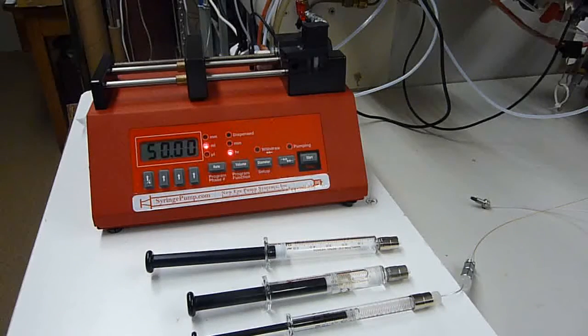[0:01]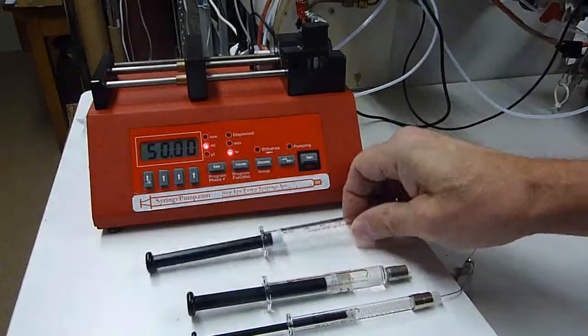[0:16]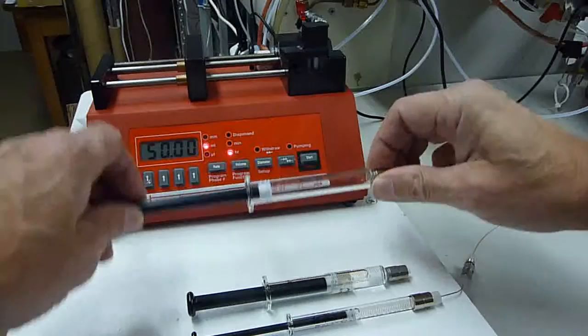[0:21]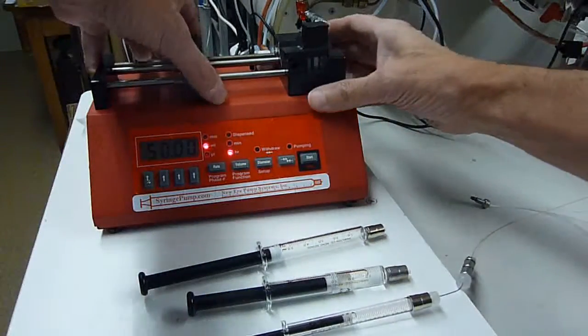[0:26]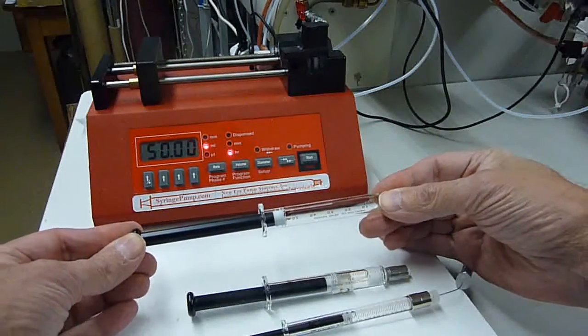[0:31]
I'd like to go over one of the accessories that I find useful for LCMS systems, and that is a syringe pump. A syringe pump holds a syringe. My favorites are the 5 ml and the 1 ml gas-tight syringe. And the job of the syringe pump is to push the plunger, displacing fluid at a constant rate.
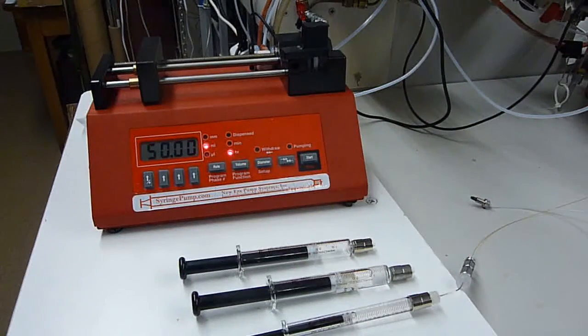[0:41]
This guy here is a relatively inexpensive syringe pump. It's about $300. And if you get a less expensive syringe pump, then you can make experiments, make changes with it, even though you void the warranty and accept all responsibility for any consequences that you do, right? So if you make changes like I make changes, then those changes are your responsibility.
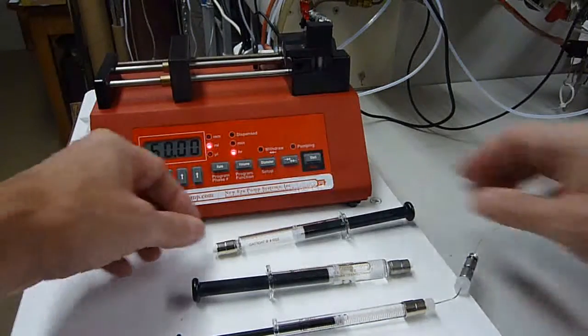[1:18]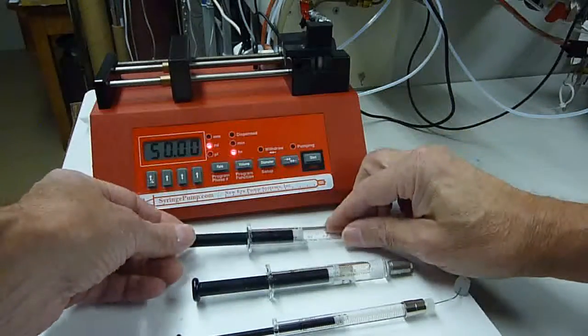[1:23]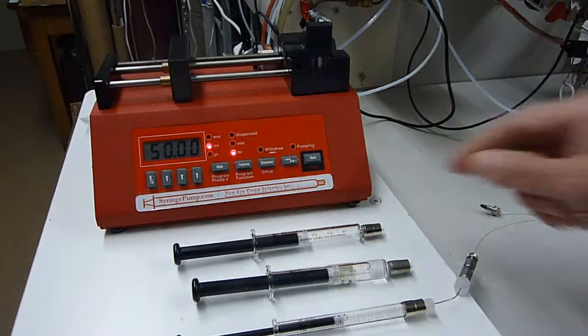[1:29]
Both the 5 ml and the 1 ml gas-tight syringes have the same displacement length. So if I set up the controls for a 5 ml syringe flow, and I swap syringes, I don't bother changing the display and the diameter. I just know to divide the display by 5. That is, 1/5 of the flow is what the syringe is actually going to deliver if I use a 1 ml syringe instead of a 5 ml syringe.
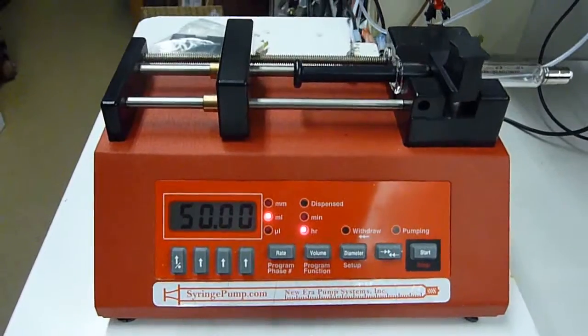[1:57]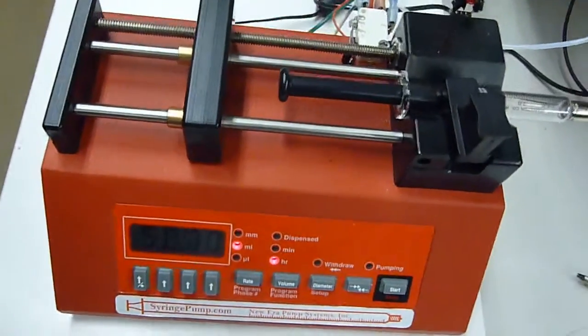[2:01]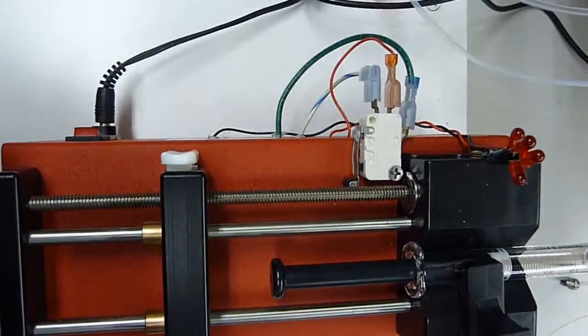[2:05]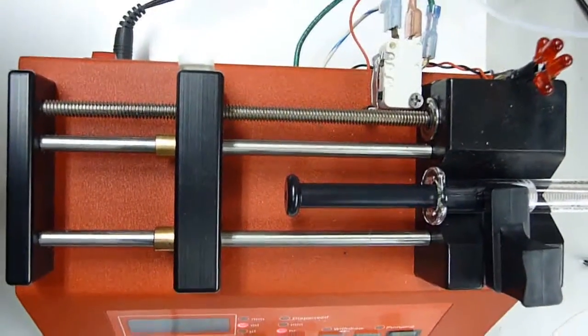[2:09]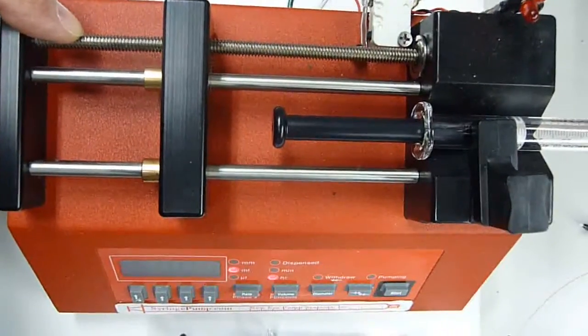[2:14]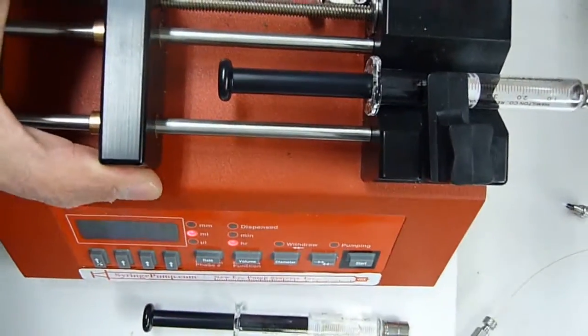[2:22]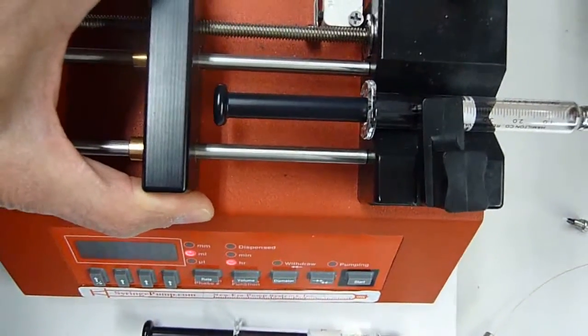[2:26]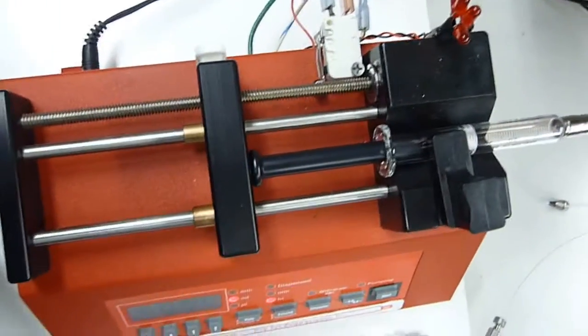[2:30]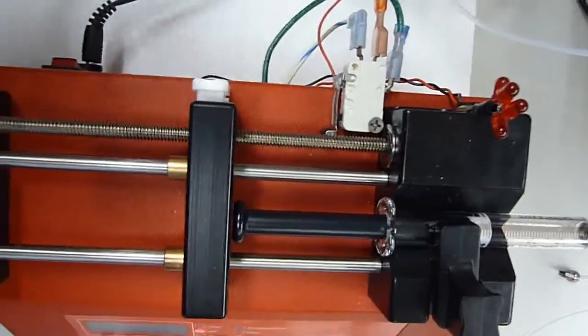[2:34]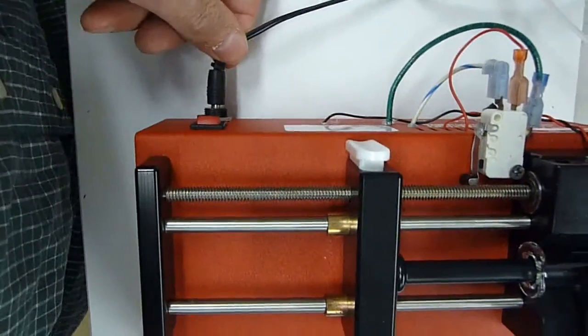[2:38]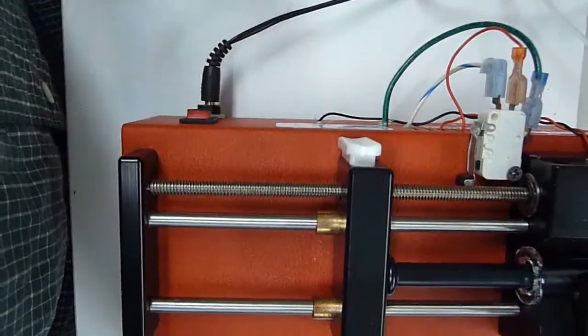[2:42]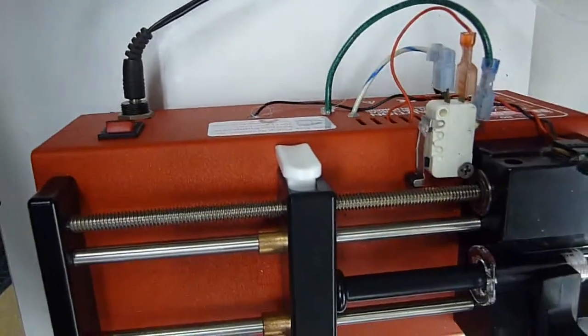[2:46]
So one of the changes I made to this unit is I added a microswitch. This unit has some good power, and if you put a plastic syringe in here and let it go all the way, it can crush that plastic syringe. So I wanted something to stop the mechanism when it got close to the end and let me know. I only do this because this power is only 12 volts DC. If this was AC power, I would not do this at all. But 12 volts DC, I'm pretty comfortable with that.
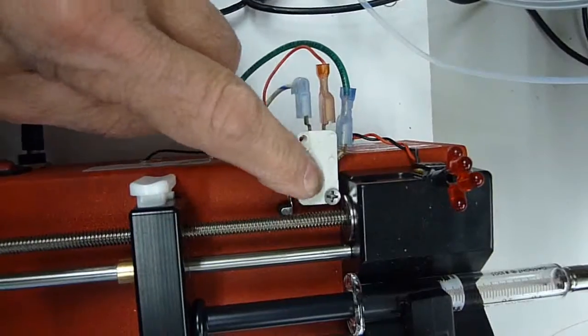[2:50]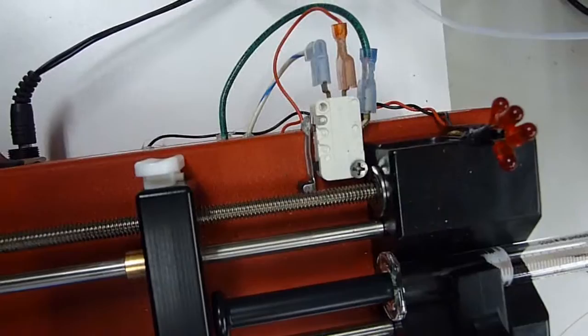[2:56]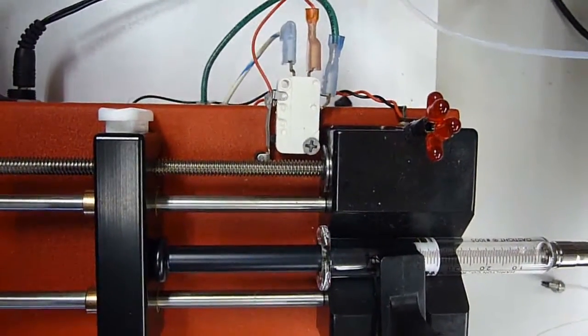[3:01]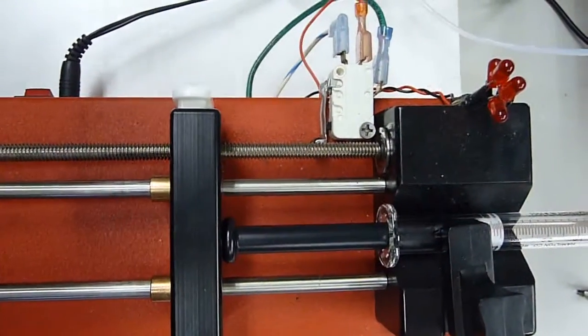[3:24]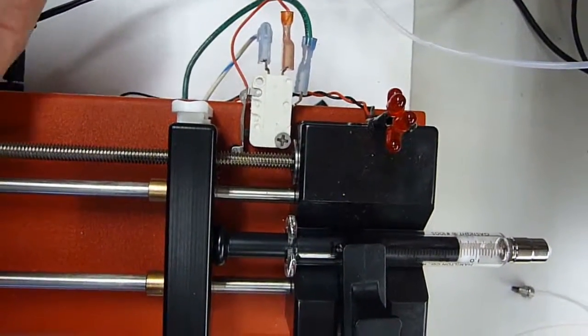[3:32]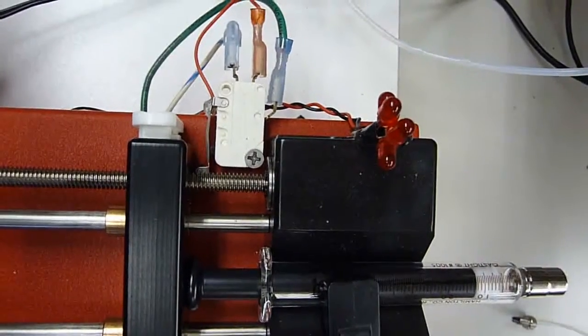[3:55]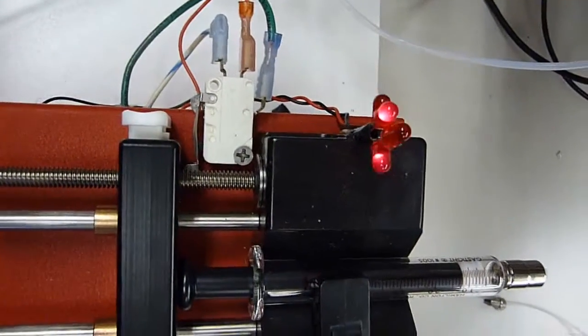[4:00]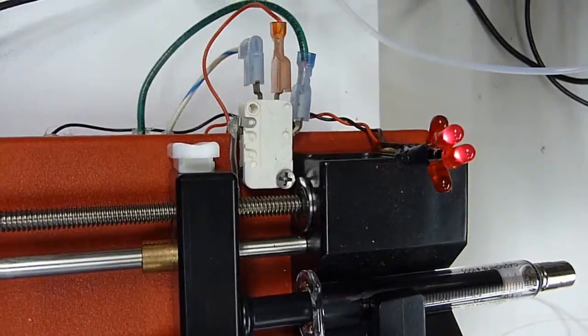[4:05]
And then this is a micro switch. There's 12 volts coming in here, and in this configuration, it's going out here, and the 12 volts is now here. As the syringe pump moves and pumps, we'll set this up, and I'm going to pause it and get the plunger close to the bottom. As it starts getting close to the end, you see the plunger's moving. It's close to the end, and it starts depressing the lever on the micro switch, and it stops pumping, and the lights go on.
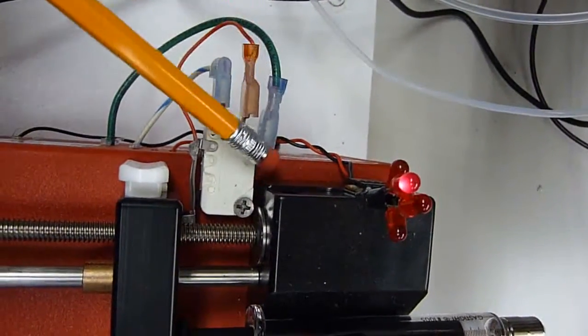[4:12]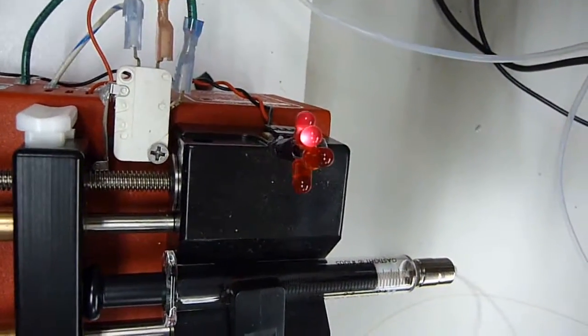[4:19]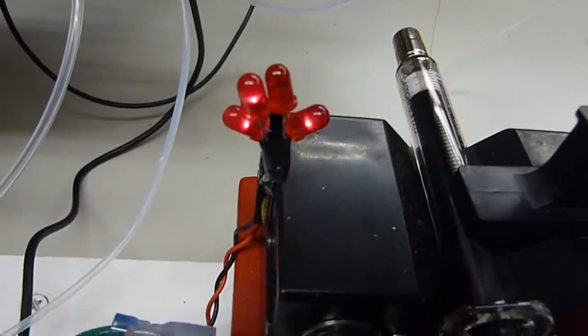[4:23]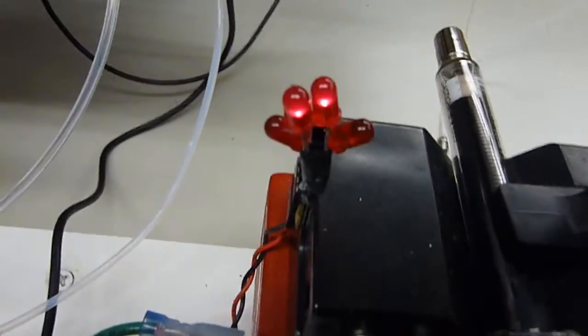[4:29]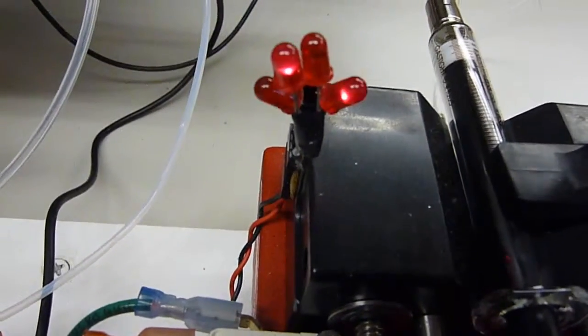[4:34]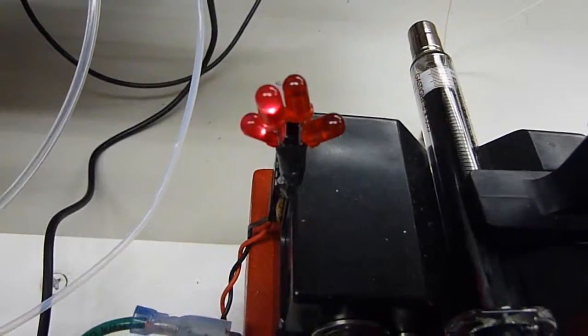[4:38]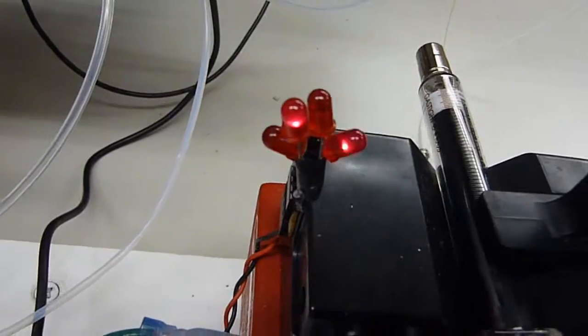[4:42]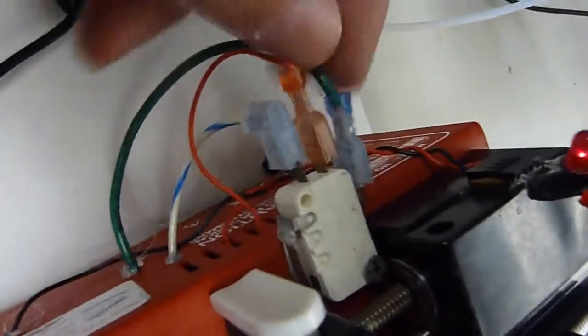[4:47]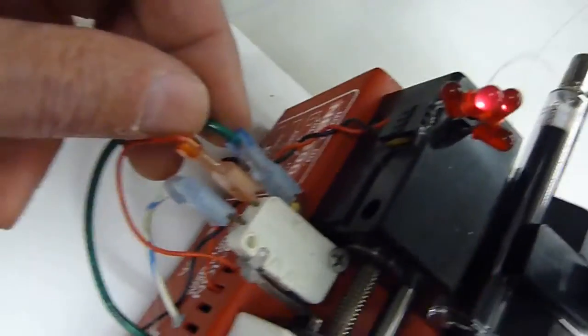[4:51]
So how does this work? In this configuration, the 12 volts is coming in here and going out here. We actually have 4 LEDs. You can get 4 LEDs for 50 cents a piece max. Three of these are little blinky ones, and one's a straight one. It takes 3 volts to power an LED. You put 4 of them in series, and 12 volts will activate 4 LEDs. Not bad, huh? Make sure if you do this, remember, I accept no responsibility for any of your modifications or actions.
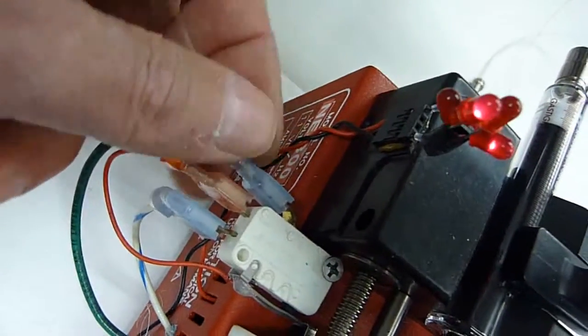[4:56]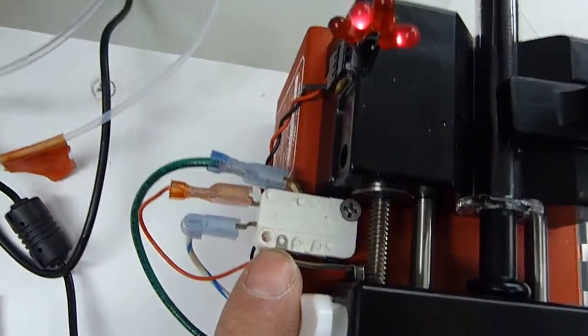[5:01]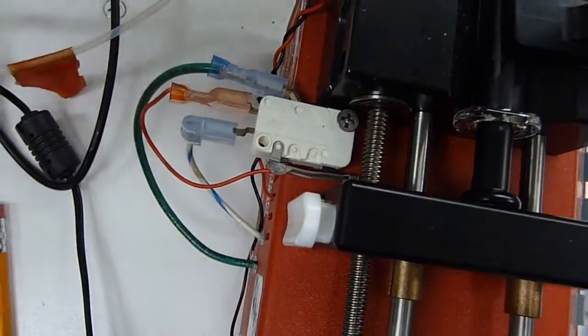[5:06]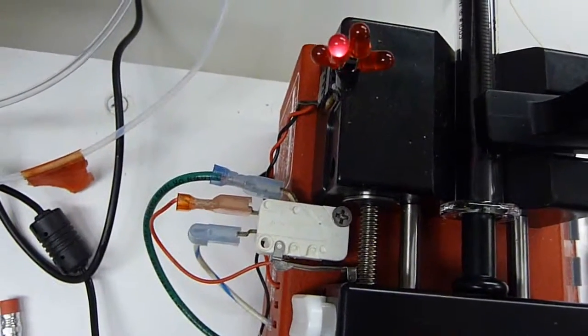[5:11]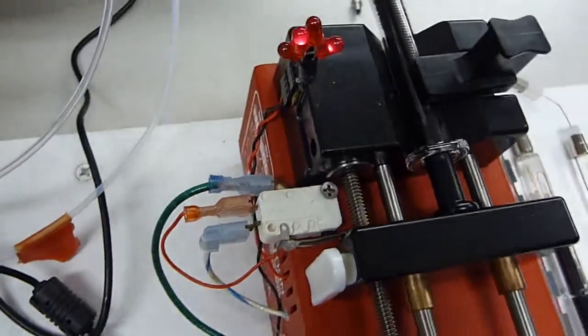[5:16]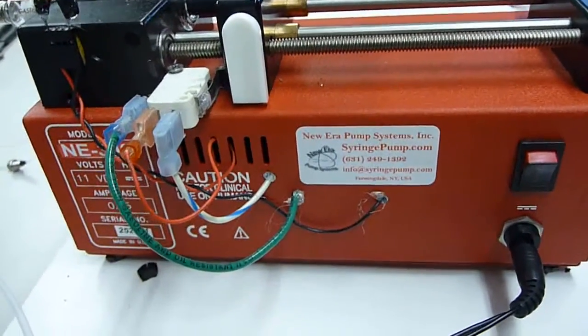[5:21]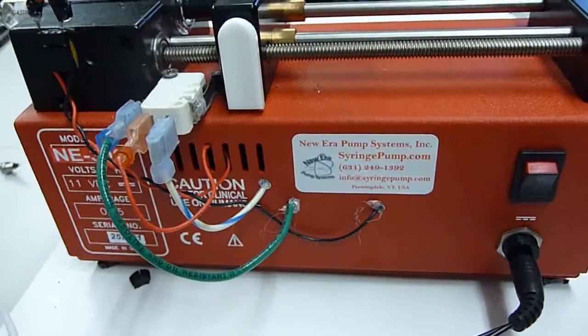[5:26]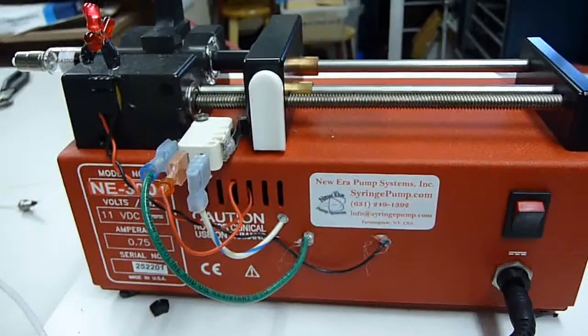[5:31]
I like slide connectors, insulated slide connectors. Microswitch, $5 to $15, LEDs, a couple of bucks, connectors, round it up to a couple bucks there. Then if we look at the back end, yeah, you have to get inside the chassis, but if you're comfortable with it, it's not so bad.
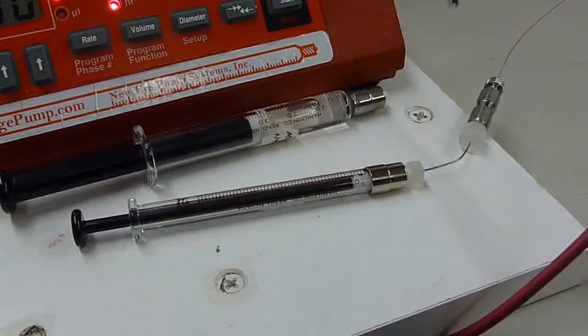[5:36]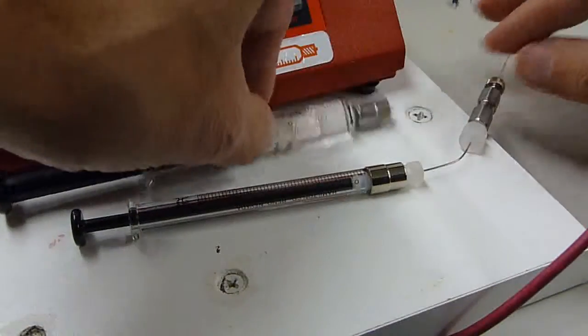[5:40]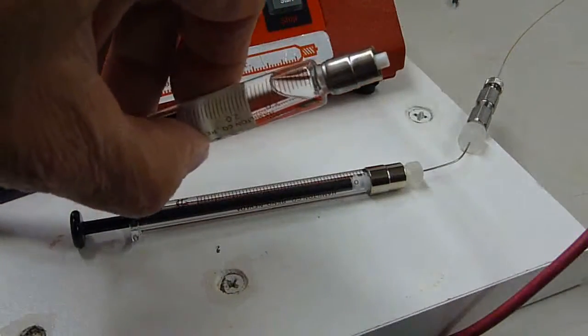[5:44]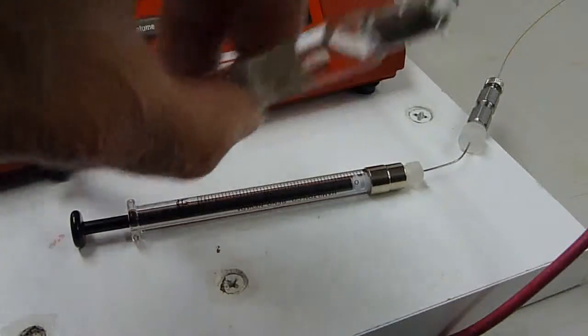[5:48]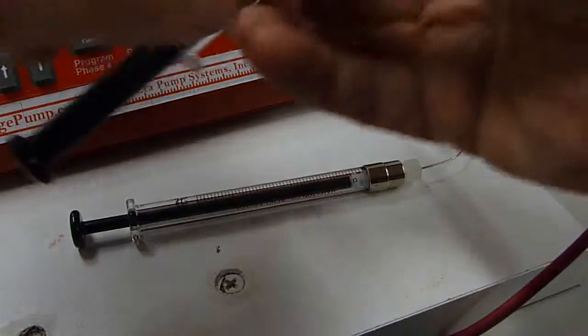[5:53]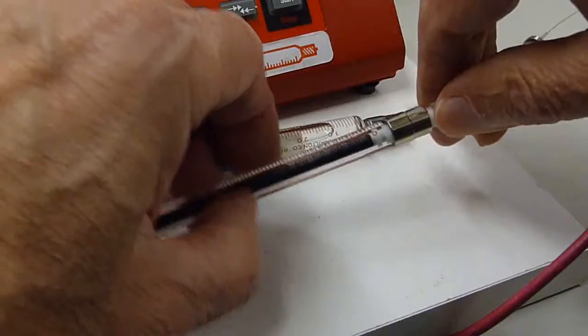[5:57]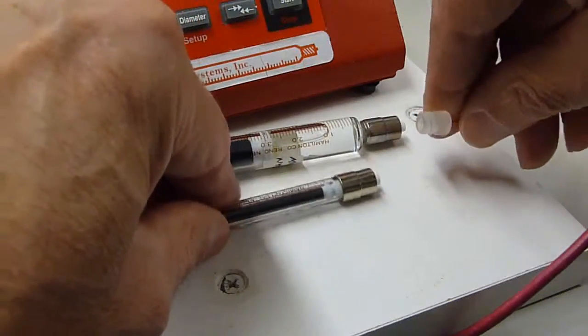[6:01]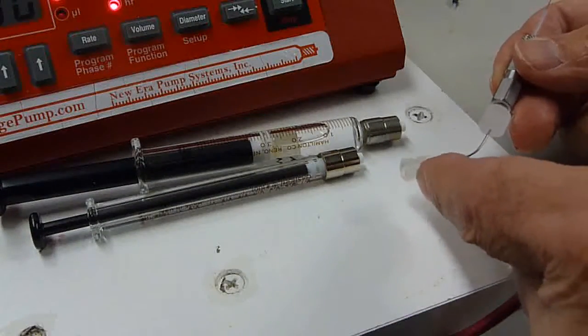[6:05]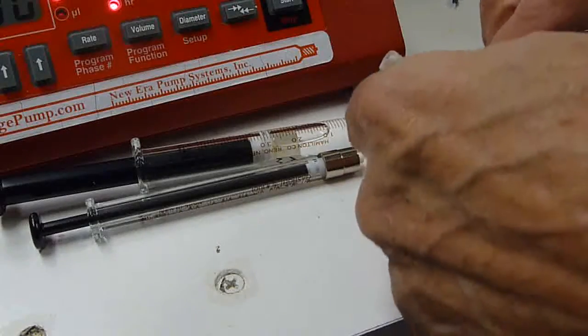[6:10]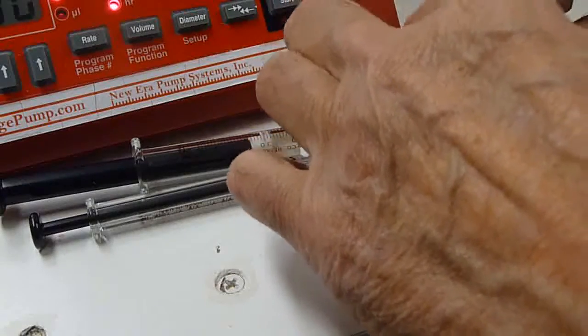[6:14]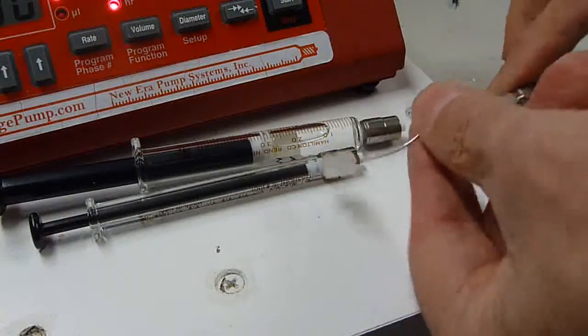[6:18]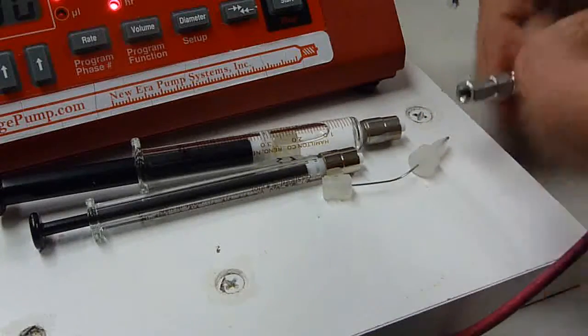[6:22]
For syringes and fittings, I like the Luer lock taper, Teflon inside, like that. For the syringe, this setup here has a Kel-F hub needle, and it's pretty close to 1/16th inch OD. A finger-tight fitting, a 1/16th inch zero dead volume fitting.
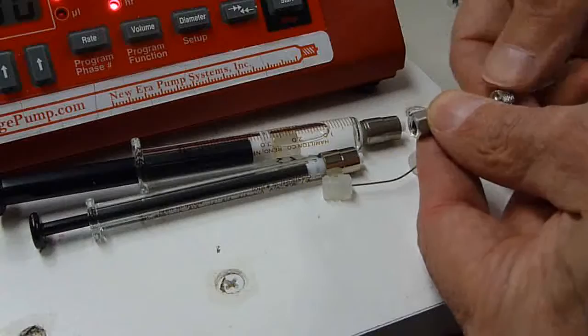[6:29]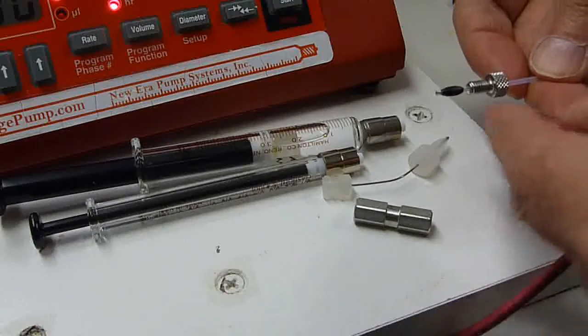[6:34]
And if we unscrew this, this Teflon sleeve here, I don't know if it's visible, is the Teflon sleeve over the fused silica. Fused silica is 360 micrometers outside diameter. Inside diameter, I like 150, 100 microns. And then this is a ferrule, a double-sided ferrule. And then this is a nominal finger-tight stainless steel fitting.
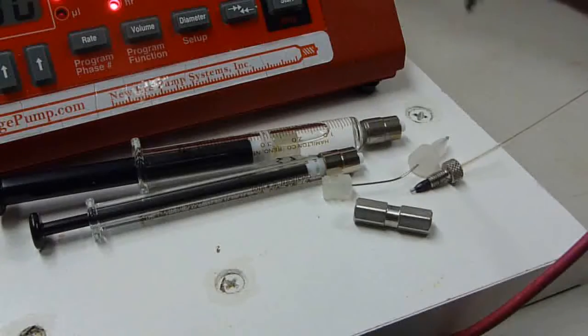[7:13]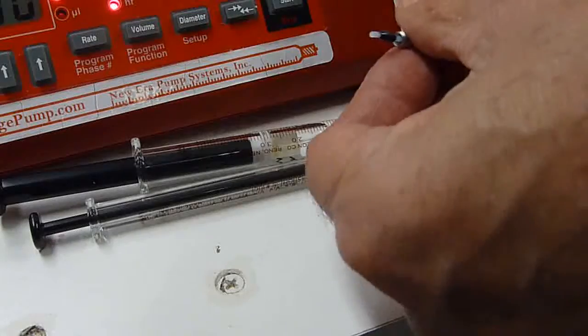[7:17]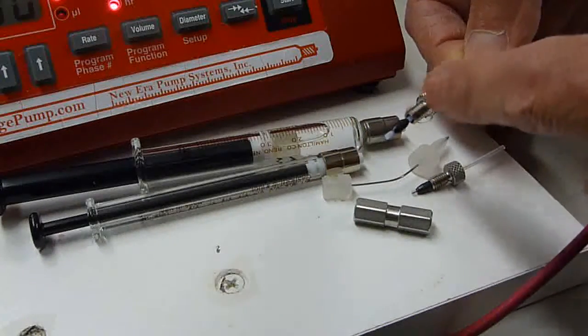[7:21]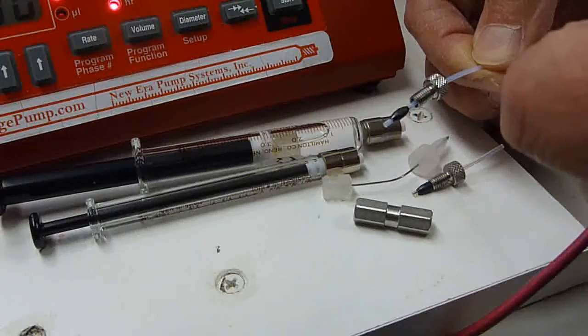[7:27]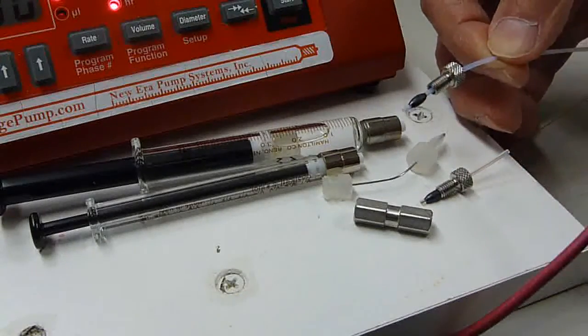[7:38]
The other way is if we just have 1/16th inch OD Teflon tubing, 0.015 inch ID. 0.015 inch ID is just a little bit bigger than 360 microns, so the 0.015 ID makes a nice sleeve for this. And then again, we have our polymer ferrule.
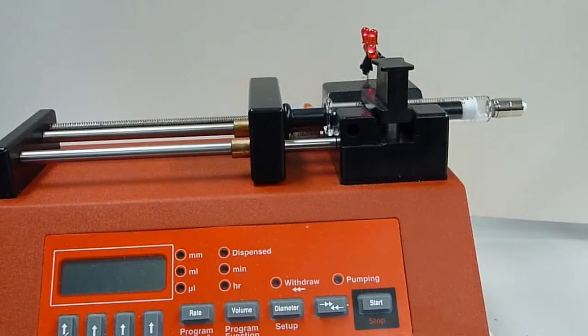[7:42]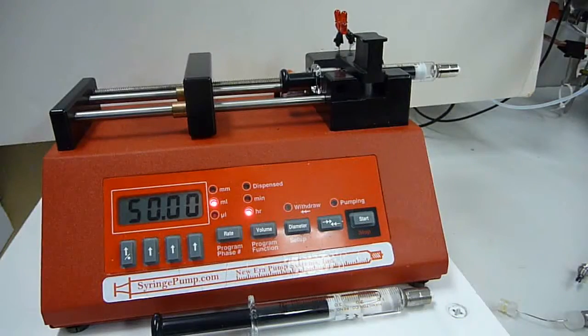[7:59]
So a syringe pump is a pretty handy accessory to have with an LC system. You can do flow injection analysis, infusion, post-column derivatization, and probably the consequence that you must keep in mind is that when I made the modification to my syringe pump, I knew I would be voiding the warranty for the syringe pump, and I accepted that consequence.
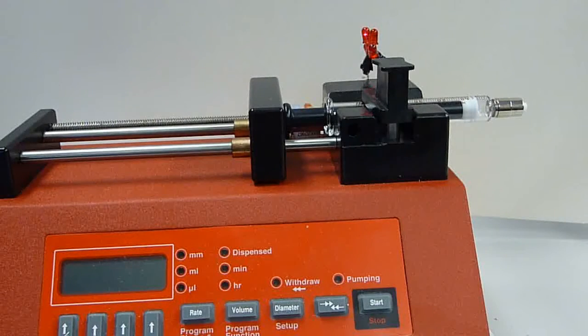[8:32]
As they say in some other videos, no warranty is expressed or implied. Any adverse consequences are not the responsibility of myself or any organization that I work for. If you make changes to your equipment or equipment that you are responsible for, then those changes are your responsibility. The consequences are your consequences.